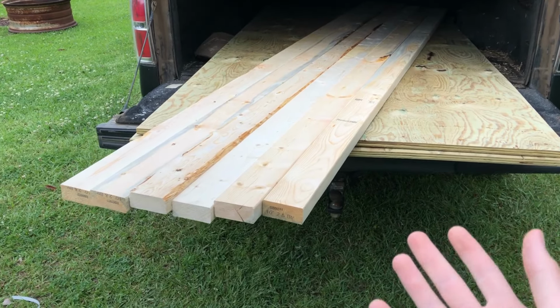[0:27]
What is up, guys? So my grandmother just broke her foot and we have to get her to her doctor's appointment. She can't really walk and she's in a wheelchair. Her doctor's appointment is in about 30 minutes and we need to get her out of the house really quick. So let's see if we can build her a wheelchair ramp in under 30 minutes.
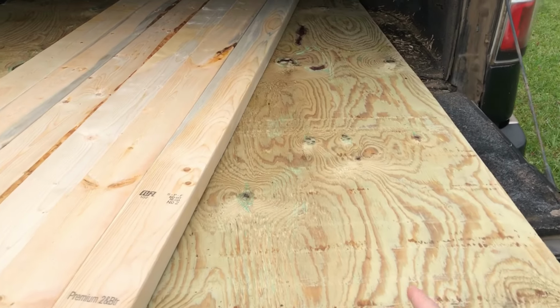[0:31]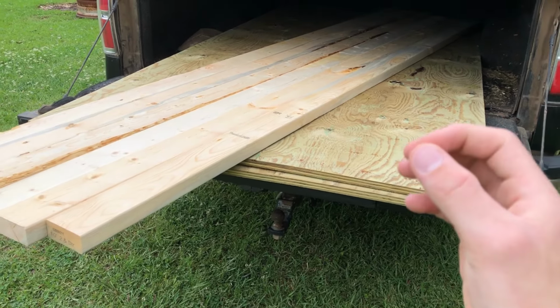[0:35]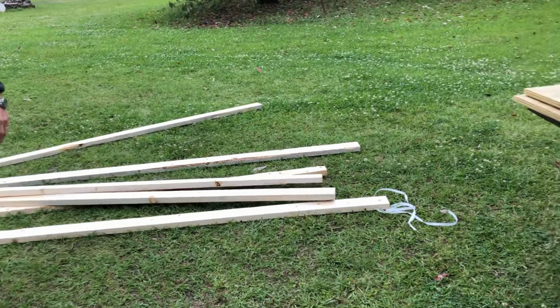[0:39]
Alright, so this is our supplies. We have six 10-foot 2x4s and we have two 4x8 sheets of plywood. We're about to rip some of the plywood and have our ramp started. Right now it's 11:47 and we're unloading everything and we should have this done in under 30 minutes hopefully, and we'll be able to get grandma out of the house.
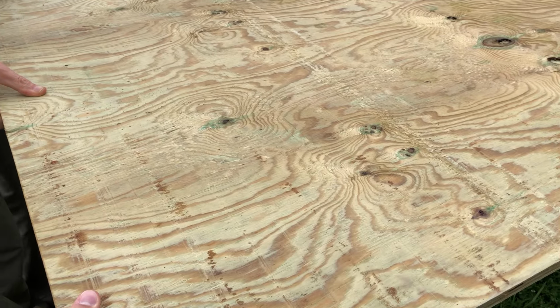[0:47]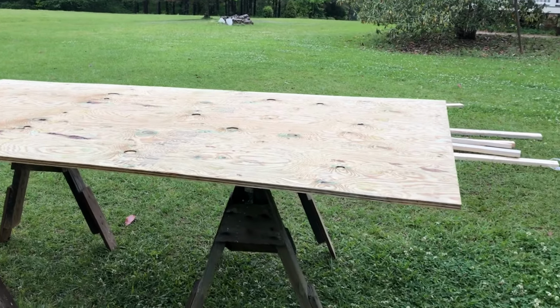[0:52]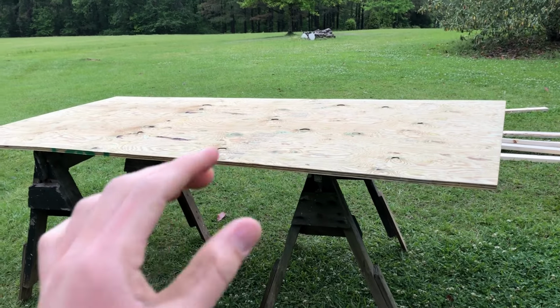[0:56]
So here goes our first sheet of plywood. And now I have our first sheet of plywood on the sawhorses. We're just going to rip the end off of it so it's the proper length. And all of this just started out as an idea. We have no plans. We have not thought about it that much. We're just going with what we think we should do, and it should work out.
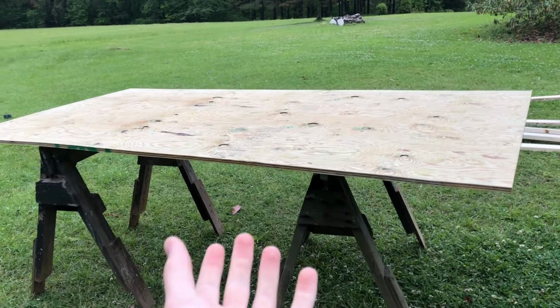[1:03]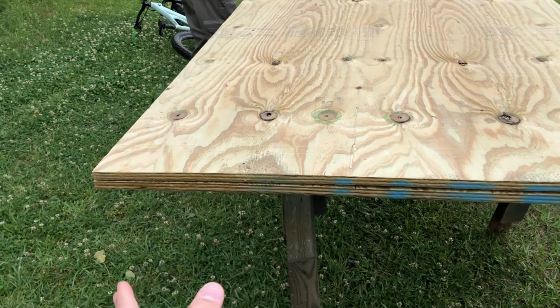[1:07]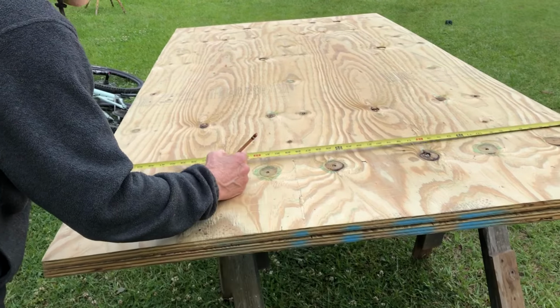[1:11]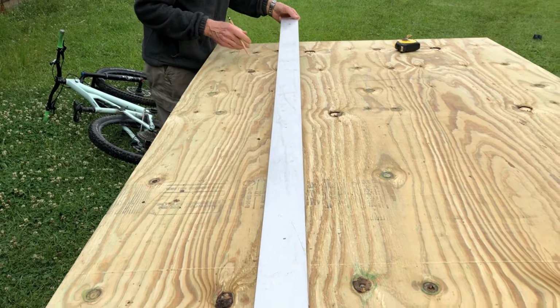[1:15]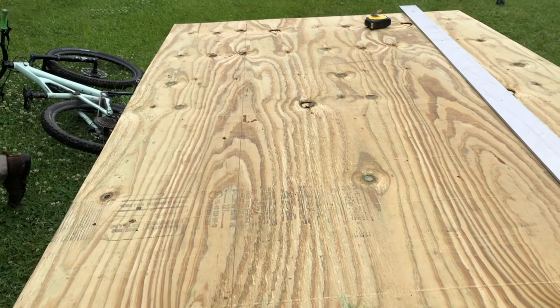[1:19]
So these sheets of plywood are 4 feet wide, and we need them to be 3 feet to fit in between the steps. So we're just going to rip off an end at 3 feet, and we have them both on top of each other, so it'll go twice as fast. So this is our 8-foot straight edge and we're just marking it at 3 feet, and this is our line that we're gonna cut down.
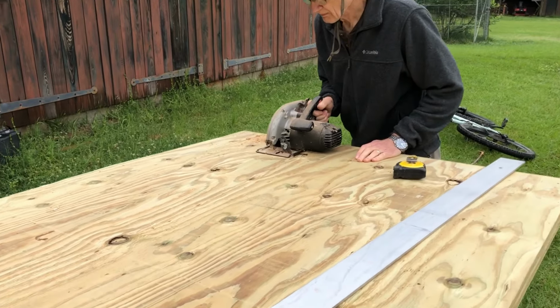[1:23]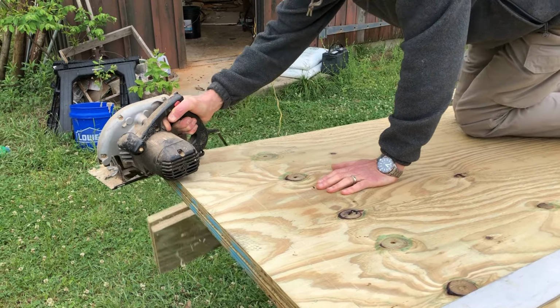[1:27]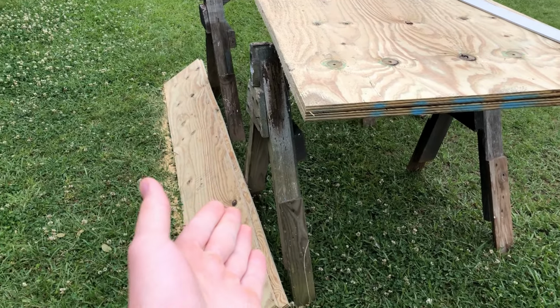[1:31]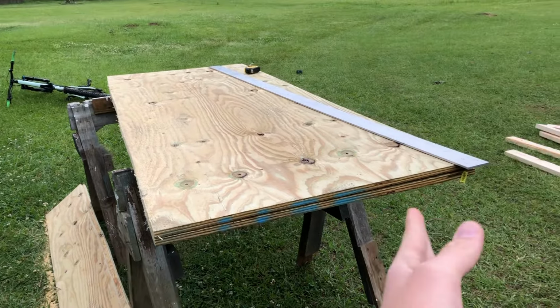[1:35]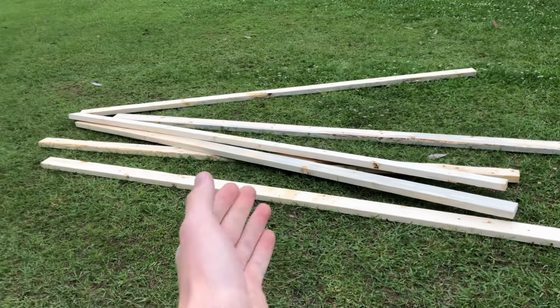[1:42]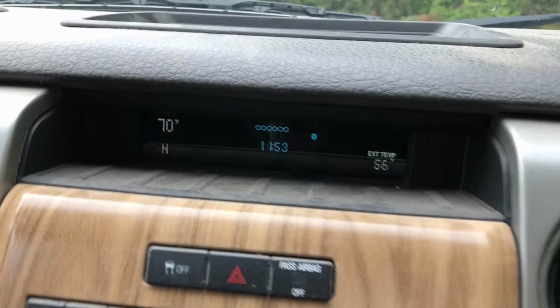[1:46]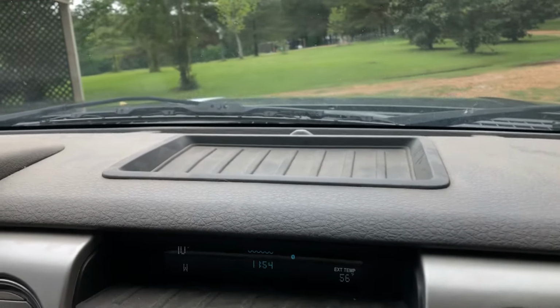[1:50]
All right, we have now successfully whacked off 1 foot from the 4 feet of plywood, so we're left with 3 feet. You know, that's very basic math, and we're ready to stick this in between the stairs with the 2x4s as support so it doesn't flex out too much in the middle. We started at 11:47, it is now 11:54, so we're 7 minutes into this project.
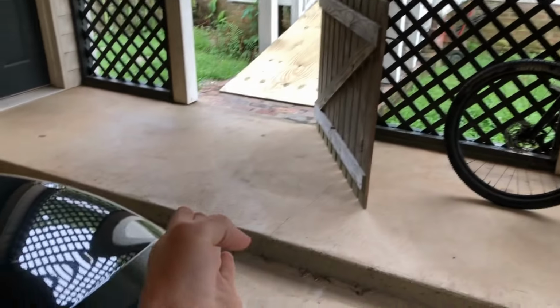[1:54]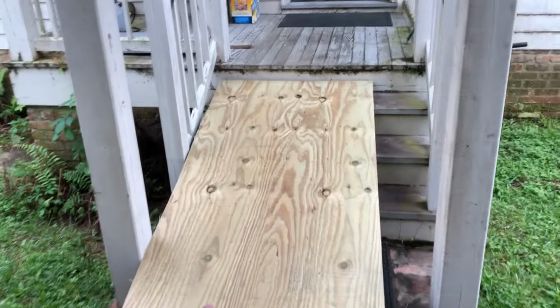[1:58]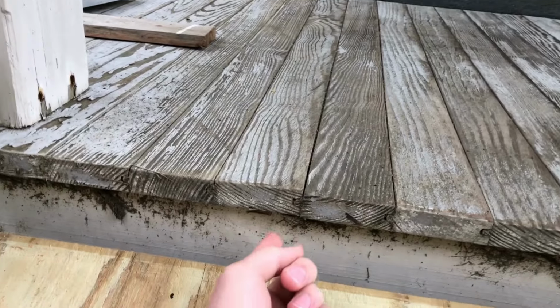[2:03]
So looking at it from this angle, we're gonna go from the steps down to this little step right here. And this is the first piece of plywood we just put here to kind of look at it. And if you notice, it's right under this lip and we want it to be butted up right under here. So we're gonna put one piece of a 2x4 just underneath it to kind of block it up. And that should be what we need. We're gonna strip it at 3 feet and that's gonna be our next board to cut.
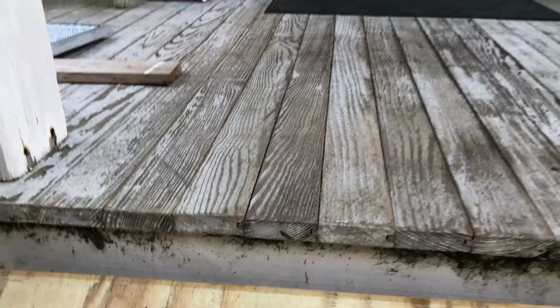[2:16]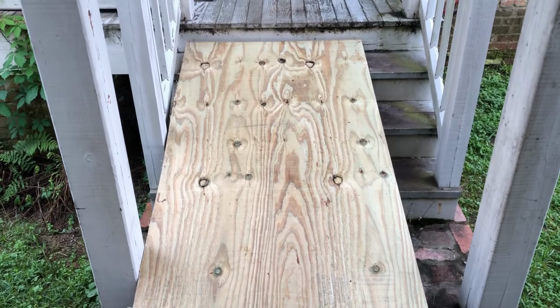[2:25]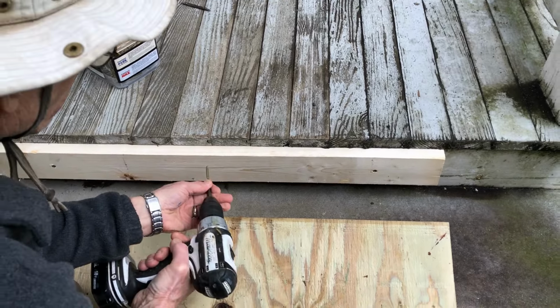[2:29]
So these steps are 4 feet wide, and with just a 3-foot ramp, you also have just enough room to walk down here normally. And then you also have this board for the wheelchair ramp. Oh, grandma.
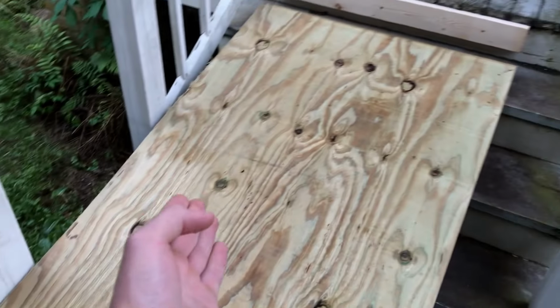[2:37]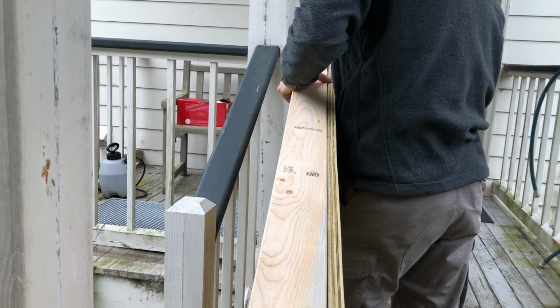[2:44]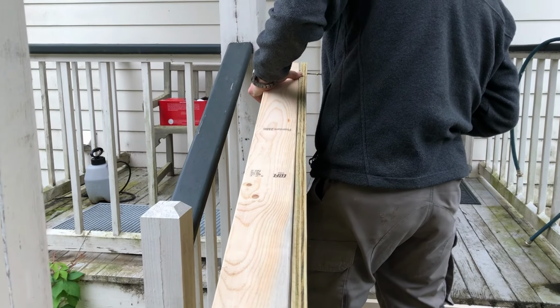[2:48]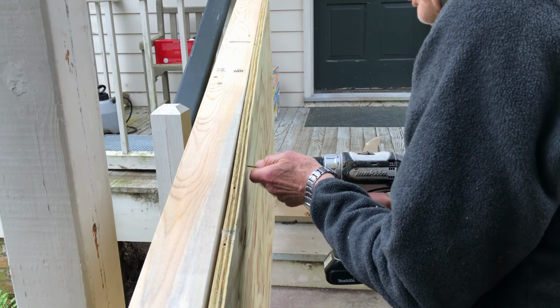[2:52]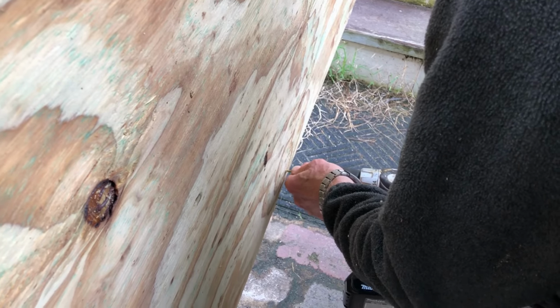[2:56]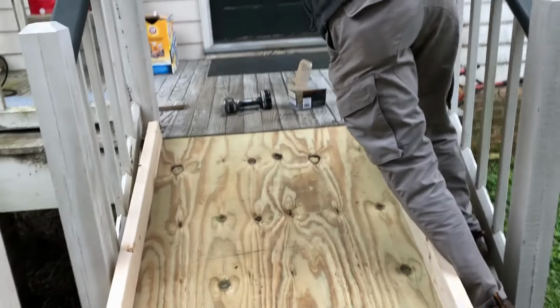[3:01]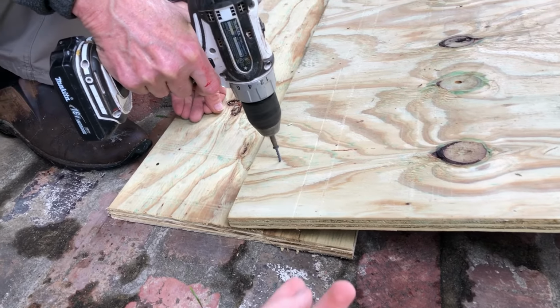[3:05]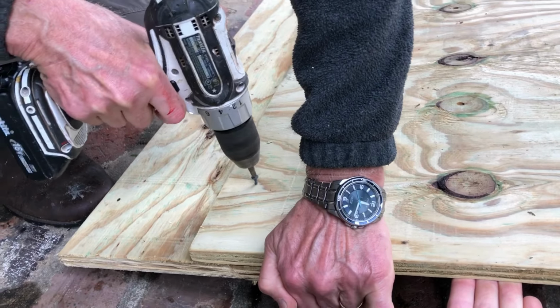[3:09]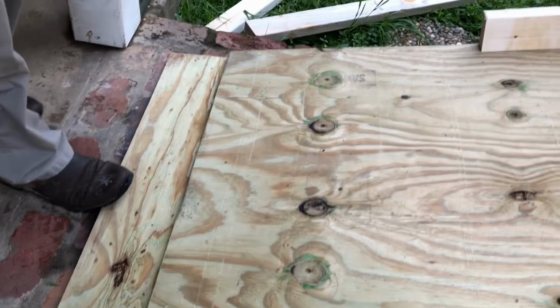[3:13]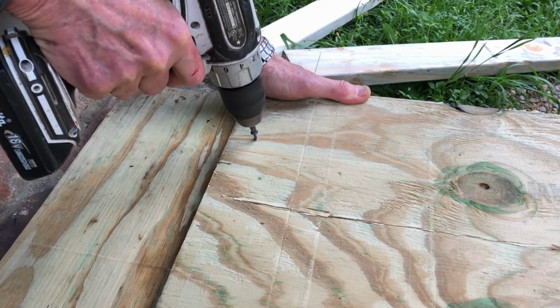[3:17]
All right, so with this board in place, we need to get the 2x4s in. They're gonna support most of the weight, and we're gonna do one 6-foot strip and the other 2-foot strip going down, and we're about to go cut those now. All right, we're about to screw on the first 6-foot strip of 2x4 to sturdy up the plywood. All right, and there's the first little strip of it. All right, so this is our little scab, and we're about to screw it on. All right, there's one side of it. And there's the other side of it.
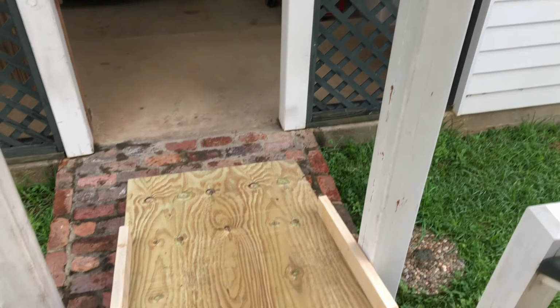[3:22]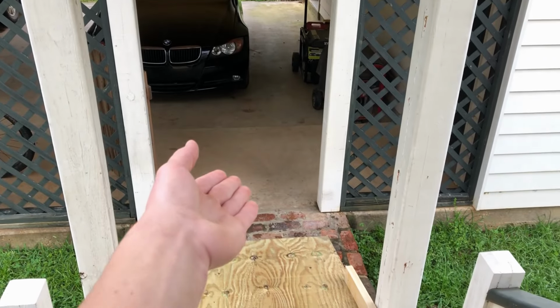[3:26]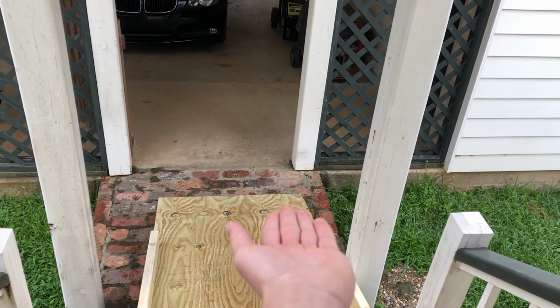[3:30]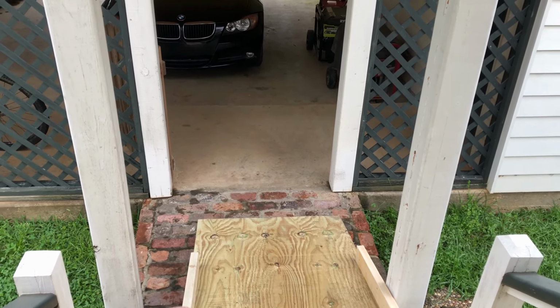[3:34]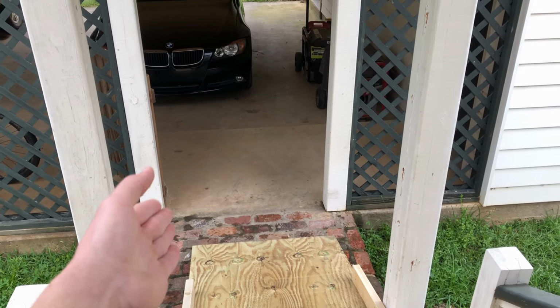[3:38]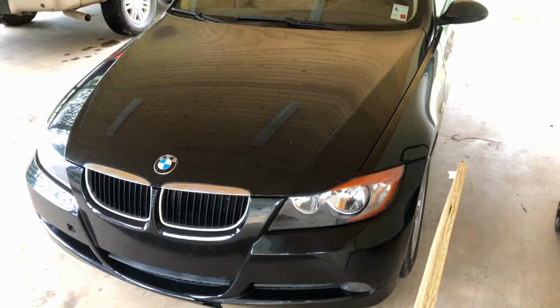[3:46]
All right, so our current thought process is we have this part pretty much done. We need the second piece of plywood that's gonna go out there, and we're gonna put a little scab of wood underneath the bottom of it so it doesn't bend out and break at that joint. We're gonna have the last two little 10-foot pieces of 2x4 connecting them to keep them strong, and this wheelchair ramp will be complete. Technical difficulties, we don't have enough room for the piece of plywood, so we have to move the car.
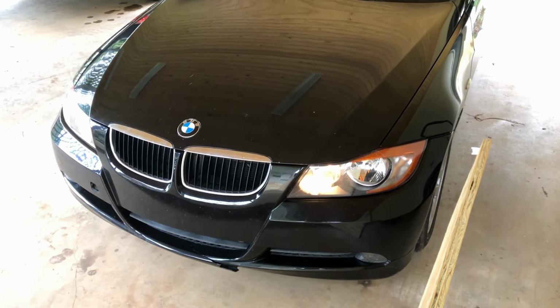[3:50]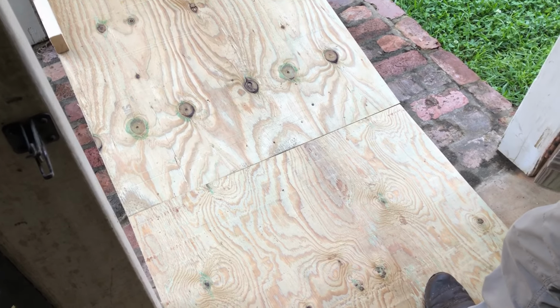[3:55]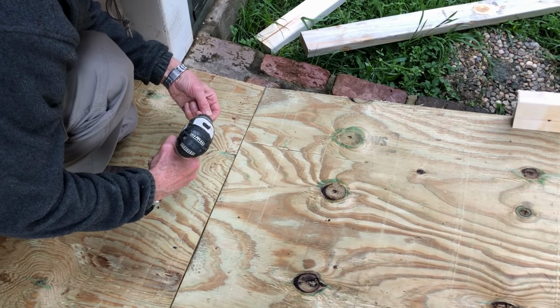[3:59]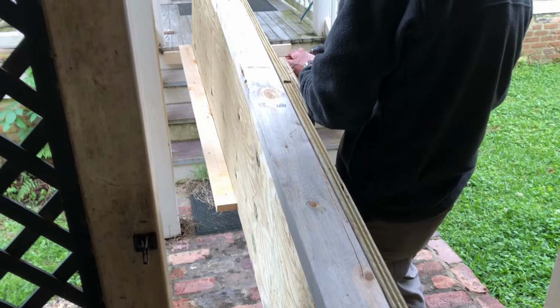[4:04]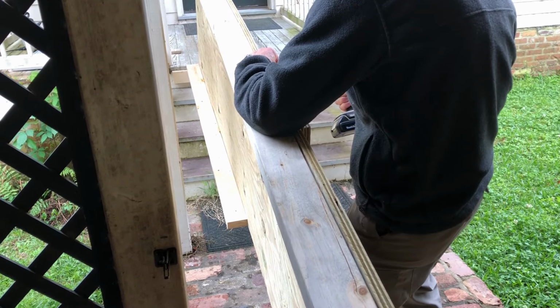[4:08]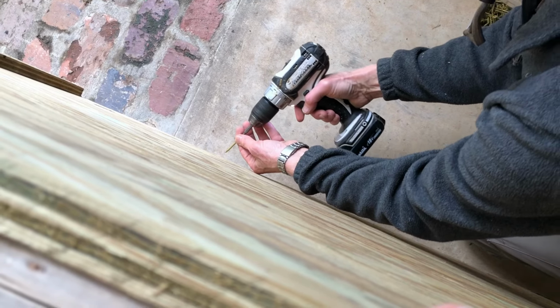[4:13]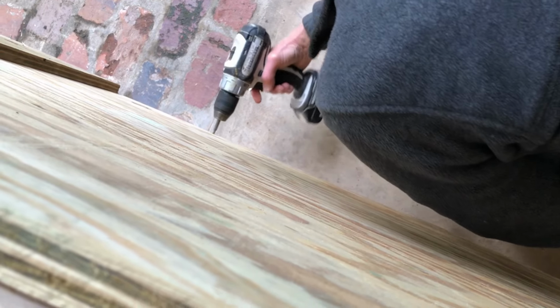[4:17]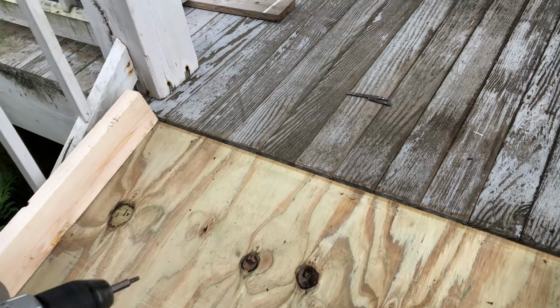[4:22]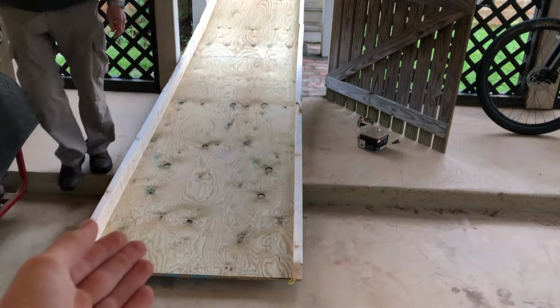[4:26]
All right, we have them butted up and we're ready to screw them both into that little scab here. And it's time to screw on the 10-foot section of 2x4 to strengthen it up. Screwing it in, and this is about to be the end of our build. Done. And in 31 minutes and 33 seconds, we completely built this wheelchair ramp.
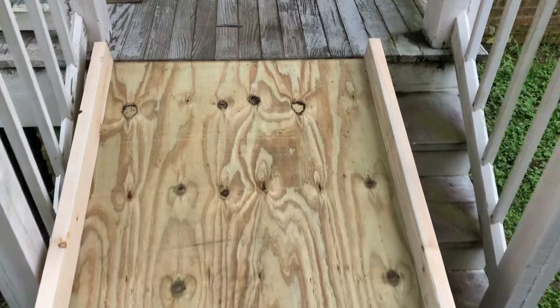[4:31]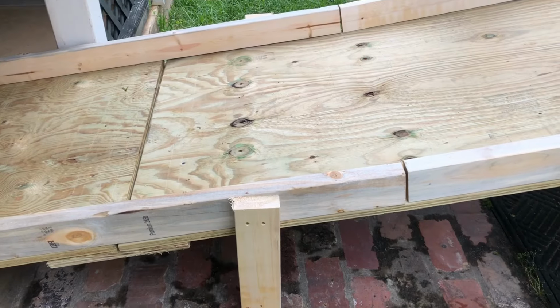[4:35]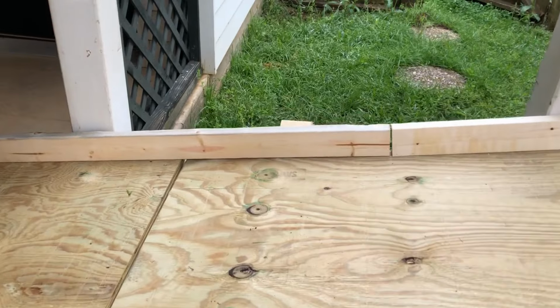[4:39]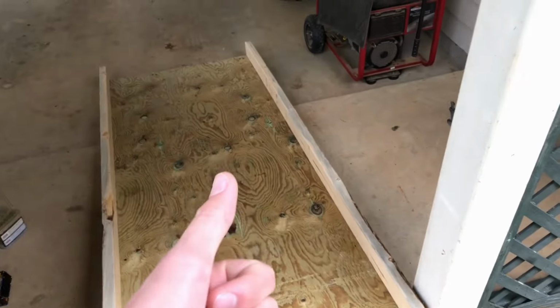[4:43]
We're gonna be able to fix that, but this is actually really sturdy and a nice wheelchair ramp to get grandma out of the house. So we did just add these little vertical supports, and it completely fixed the entire problem of a little bit of sag in the middle. And this is a very strong wheelchair ramp, and it took 30 minutes to make.
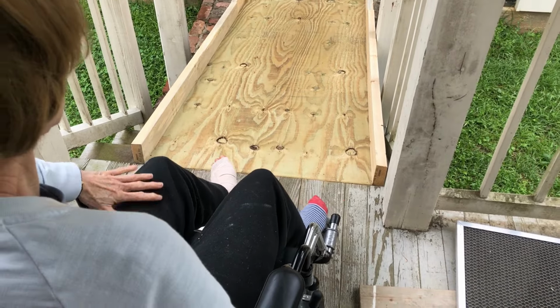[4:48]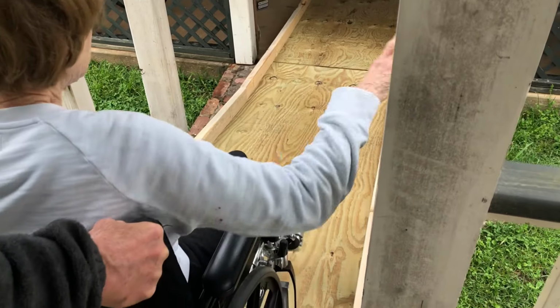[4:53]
And I don't wanna go back. Let's go back. Let's go backwards, how about it? No, see, stop. Okay. I'm going slow. Okay. Let me hold on. Too long. We need to stop right there.
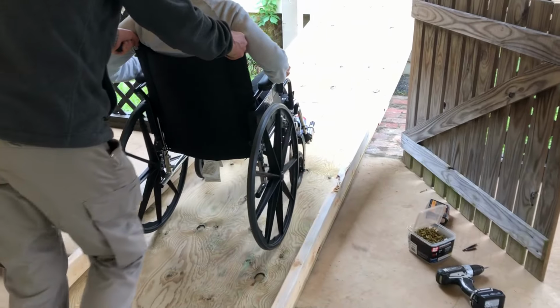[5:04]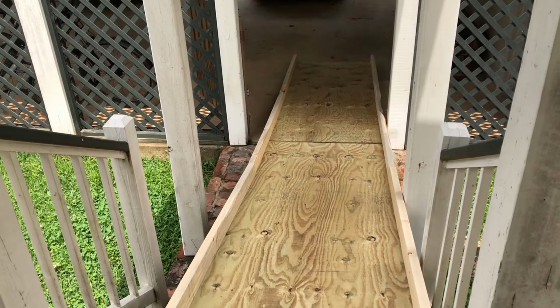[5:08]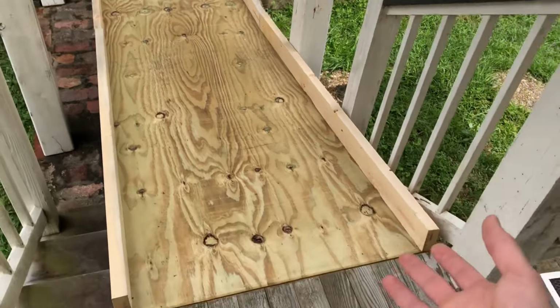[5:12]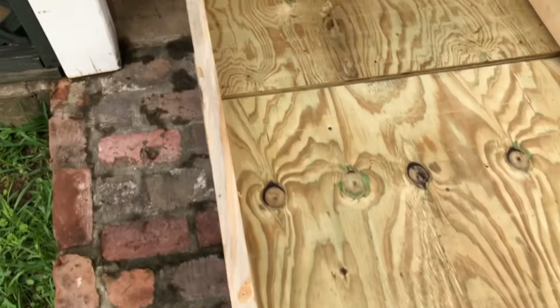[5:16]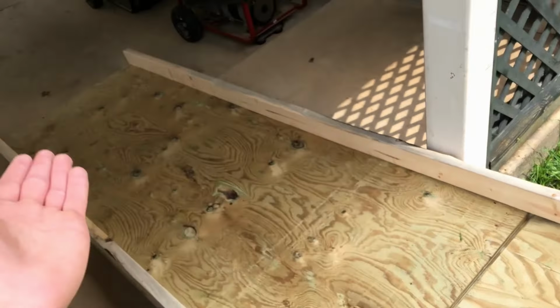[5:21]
As you can see, our wheelchair ramp was a success, and it did only take 31 minutes to build. It is 3 feet wide. You still have room left to walk down, and it is very sturdy with these 2x4s that we put on the edges. With the scab in the middle, nothing went wrong, so this is the perfect 30-minute wheelchair ramp.
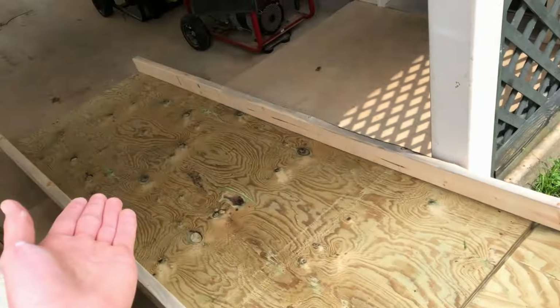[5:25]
Alright guys, hope you enjoyed this video. No grandmothers were harmed in the making of it. She got to where she liked the ramp going down and up. It's a whole lot easier than carrying her down the stairs.